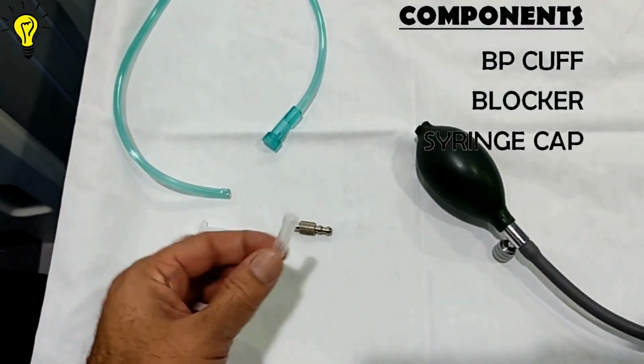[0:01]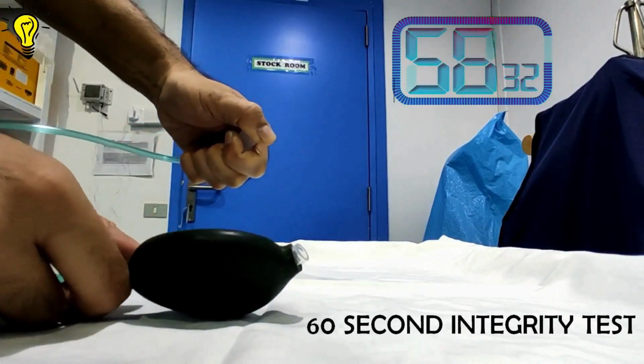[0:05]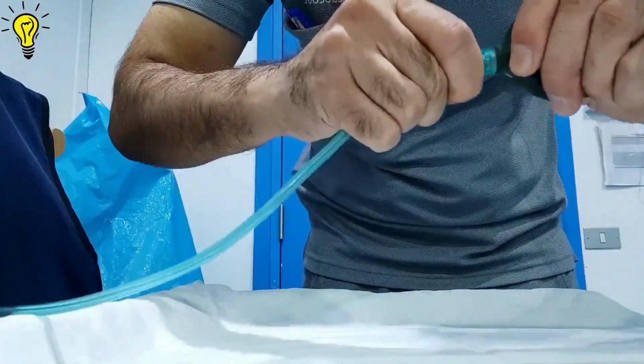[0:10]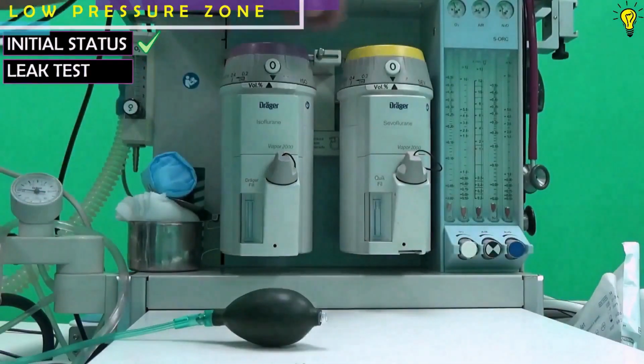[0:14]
Today, we will make our own leak test suction device for anesthesia machine using a BP cuff and practically go through the leak test. Let's begin.
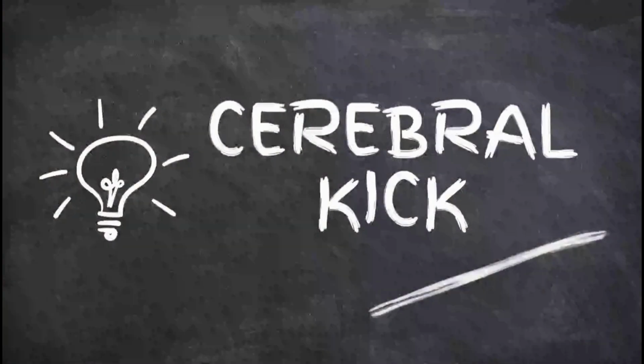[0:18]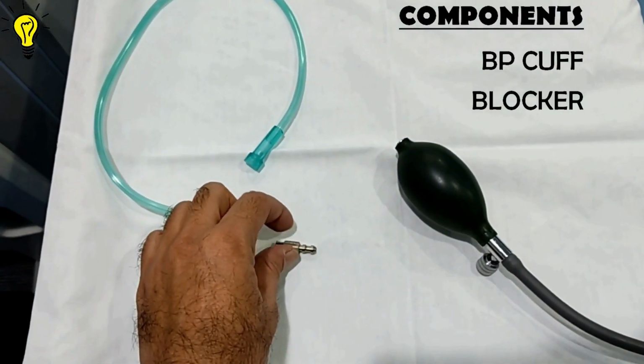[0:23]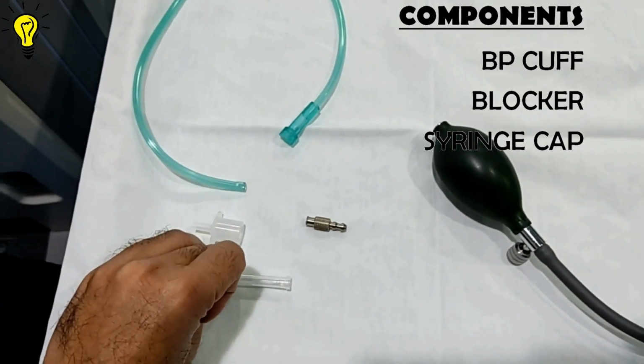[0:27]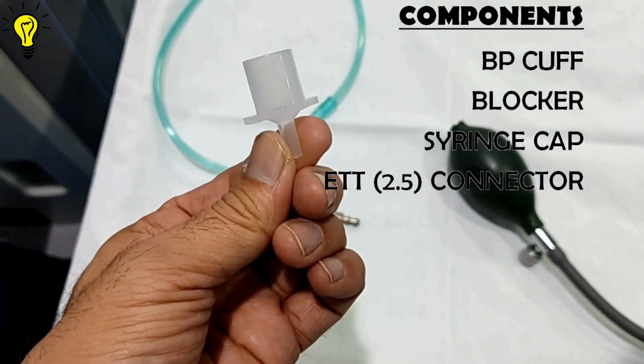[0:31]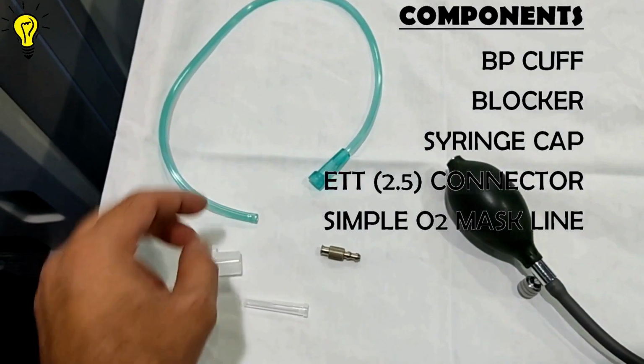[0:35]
The components you need include a BP cuff, a nozzle, which is part of BP cuff, a blocker for the cuff on outer side. I'm using a simple needle cap, a connector from ETT size 2.5, and finally an oxygen line cut from simple oxygen mask kit.
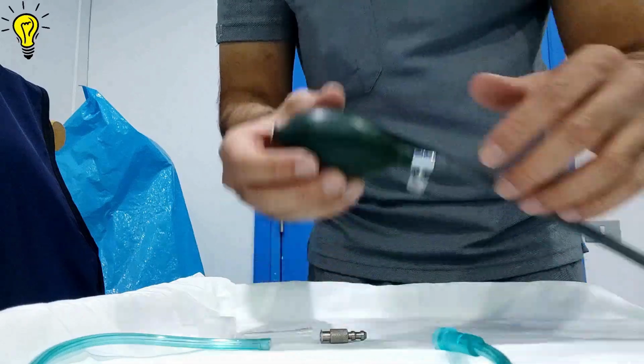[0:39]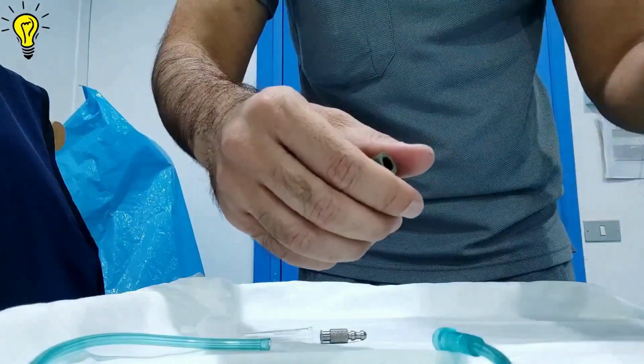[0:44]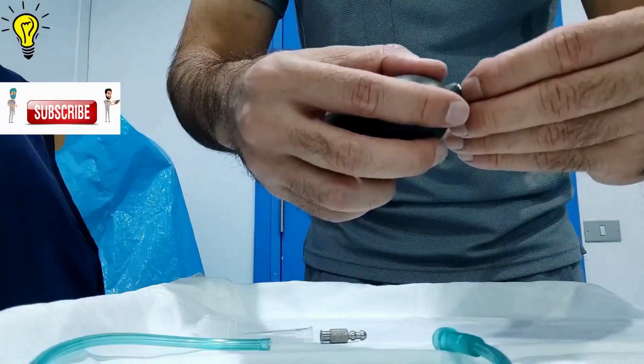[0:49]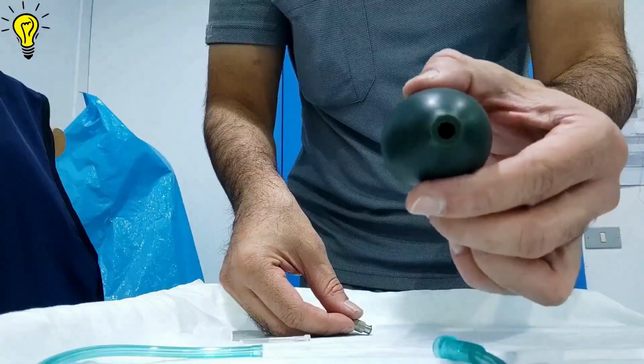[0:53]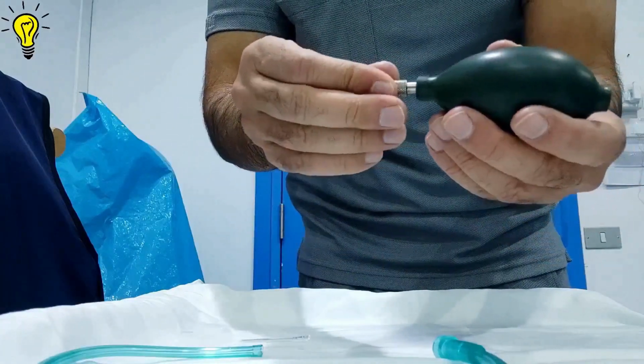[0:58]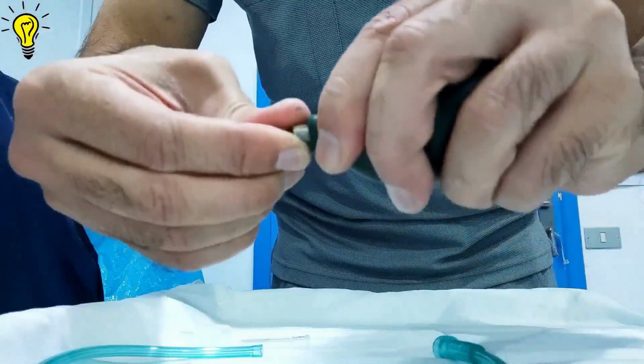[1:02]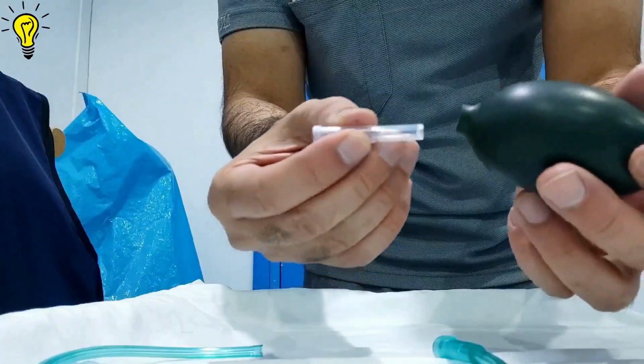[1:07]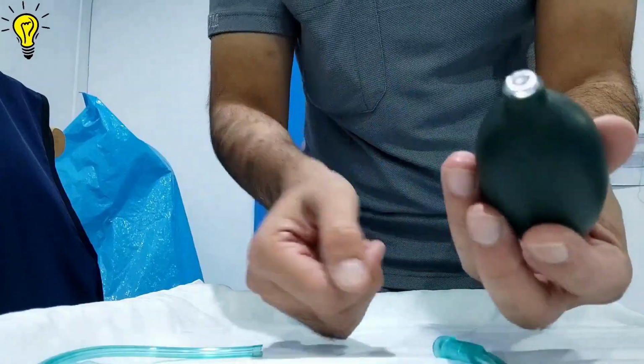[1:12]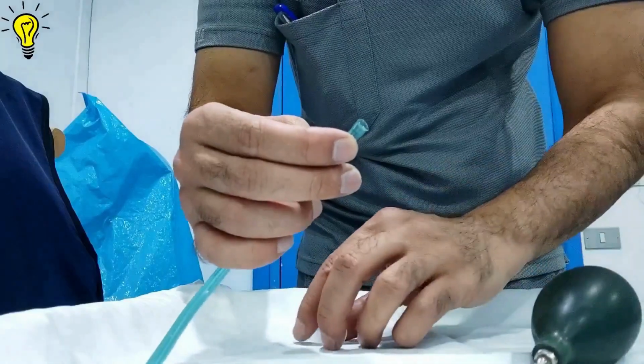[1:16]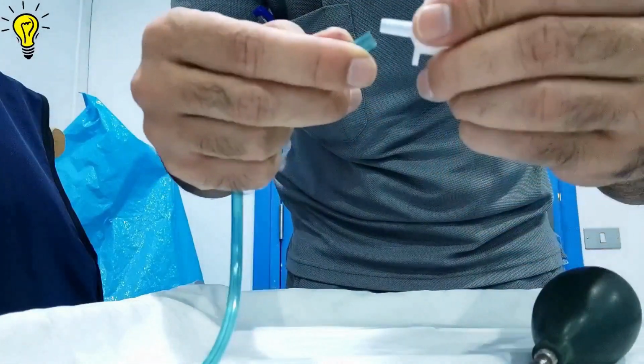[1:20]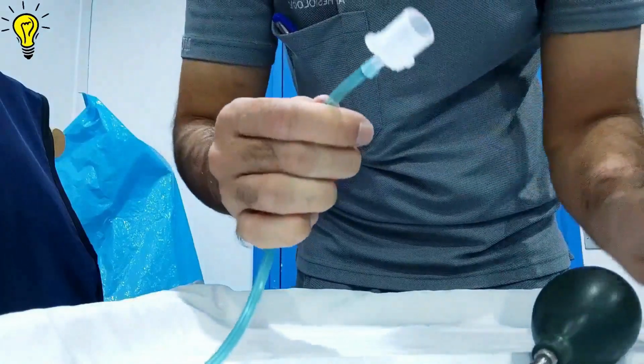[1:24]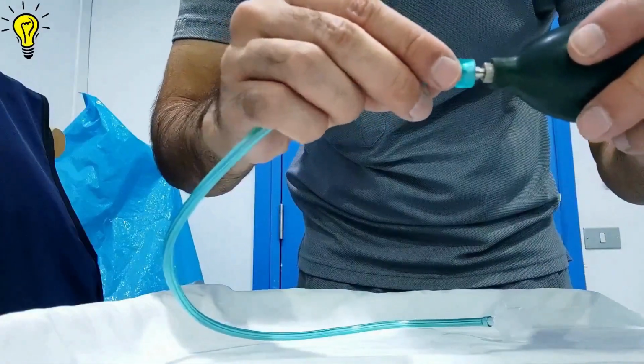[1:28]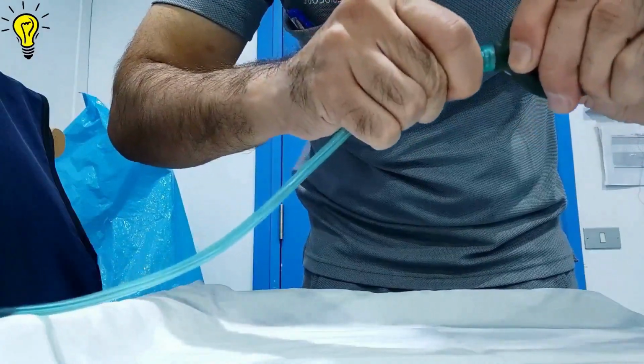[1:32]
Now insert the connector into the oxygen line on one end. Plug the other end of oxygen line to the nozzle end cuff. And we have a working suction bulb now.
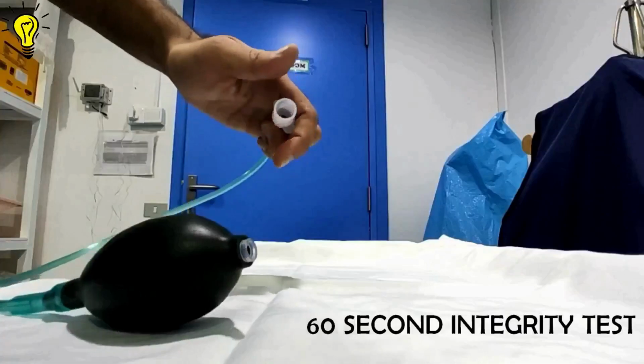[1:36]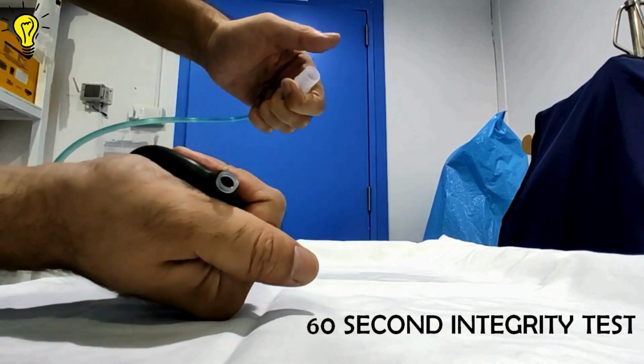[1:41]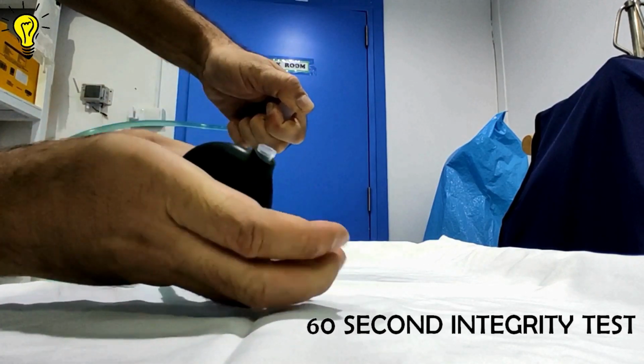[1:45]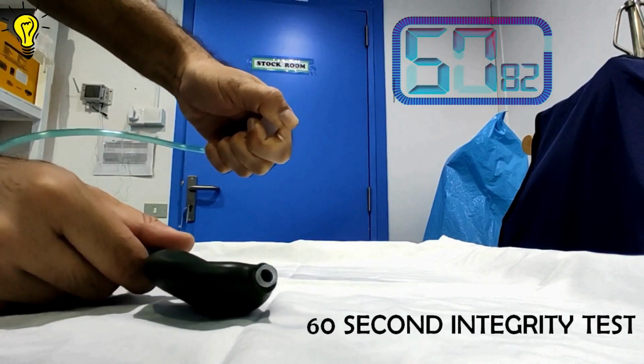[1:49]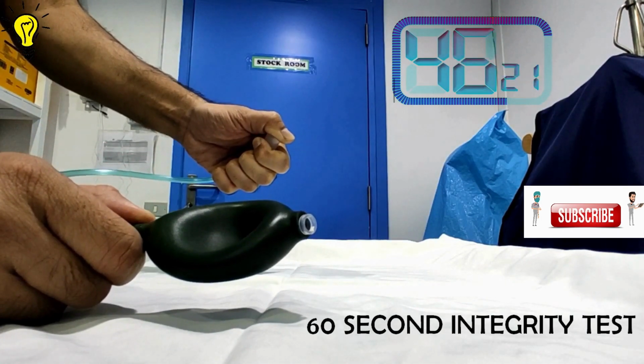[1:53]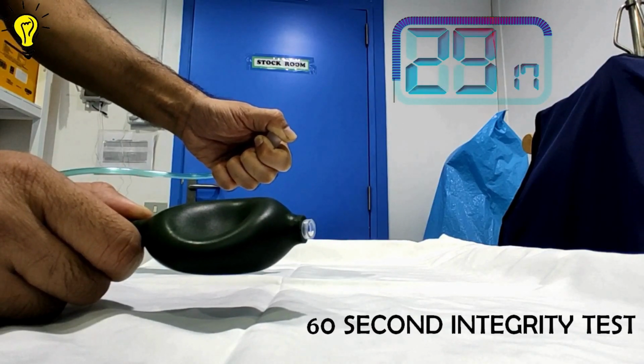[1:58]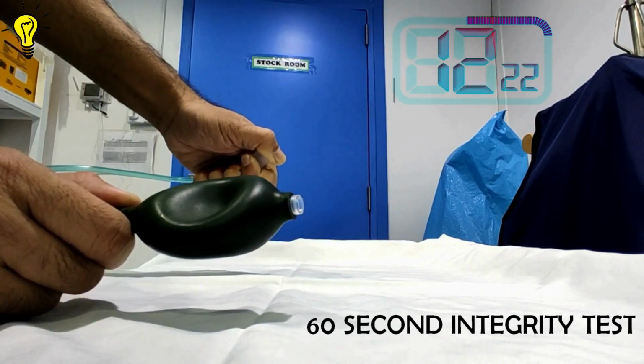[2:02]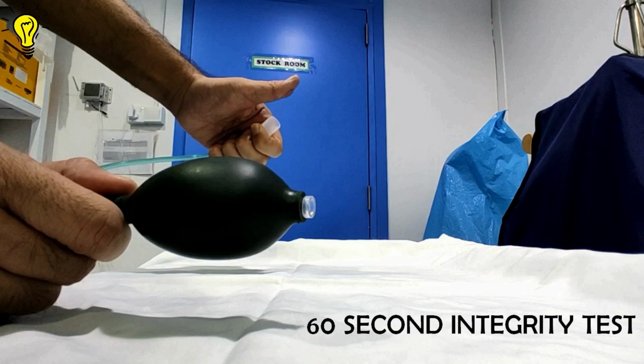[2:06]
To check the integrity of suction bulb system, deflate the cuff many times until fully collapsed and block the outlet connector with your thumb. The cuff should stay deflated for at least 60 seconds. And it's a success.
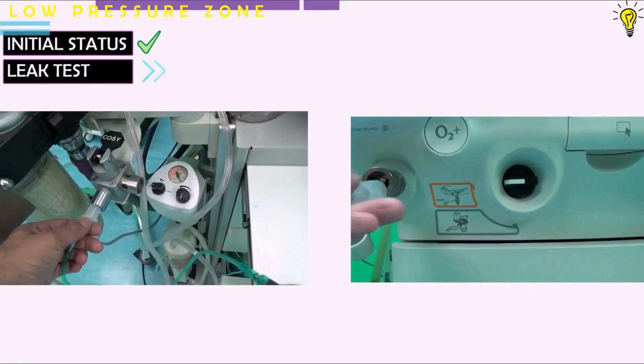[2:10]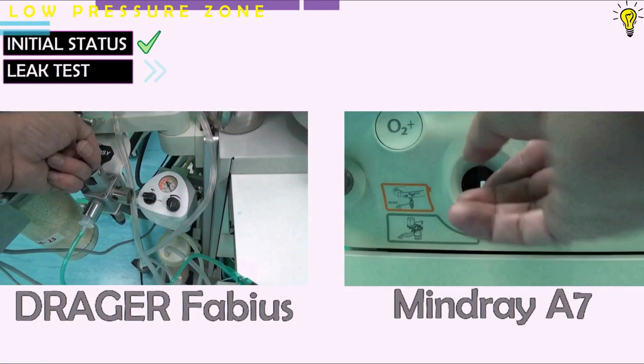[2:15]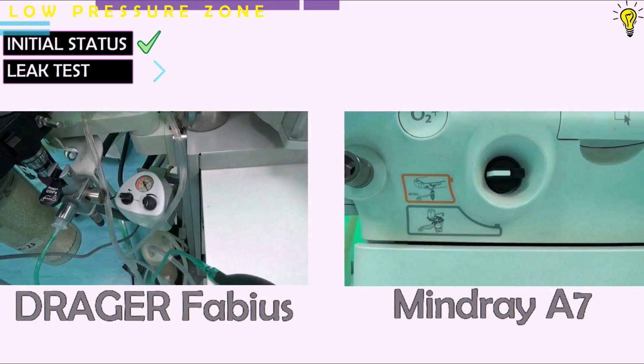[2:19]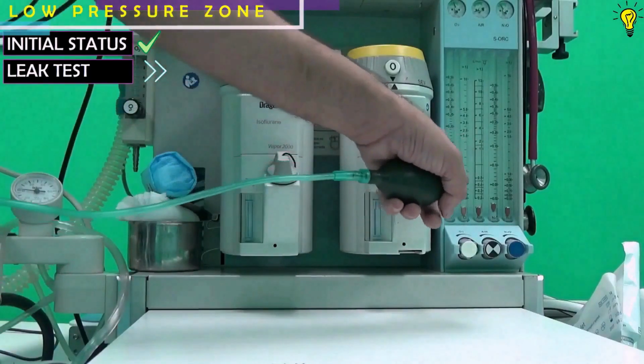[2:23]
So now connecting the connector to the common gas outlet and switching on from circle system to the fresh gas outlet port. Now the machine is off at the moment. The flow meters are off, the vaporizer is off.
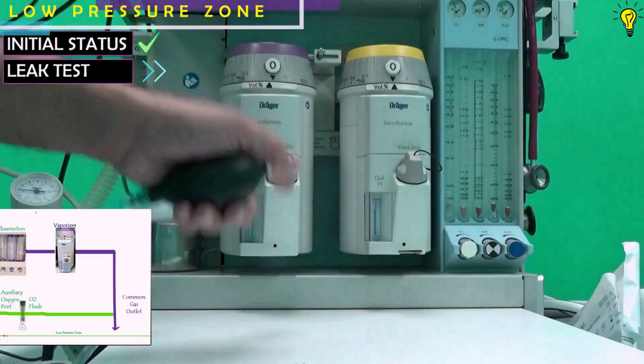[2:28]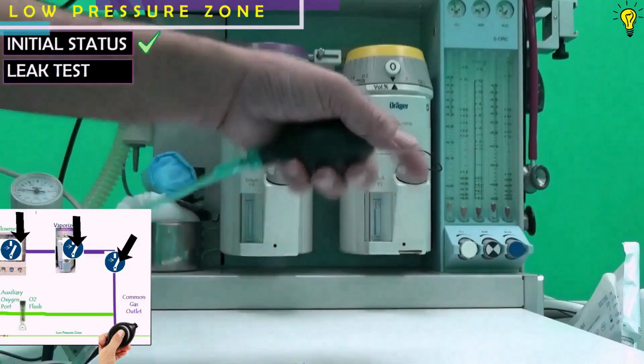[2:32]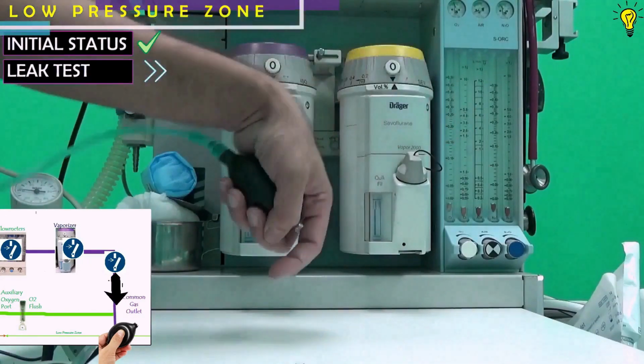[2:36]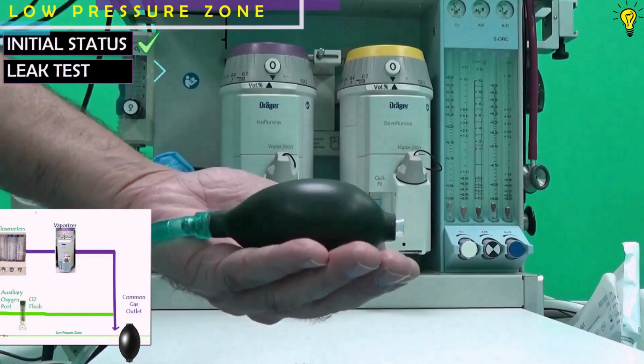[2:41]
Now if there is any leak in the system, then the negative pressure generated by this suction bulb would drive the ambient air from the breakage point into the circuit and it would inflate the bulb, right? But if there is no leakage, the bulb would stay deflated for 10 seconds.
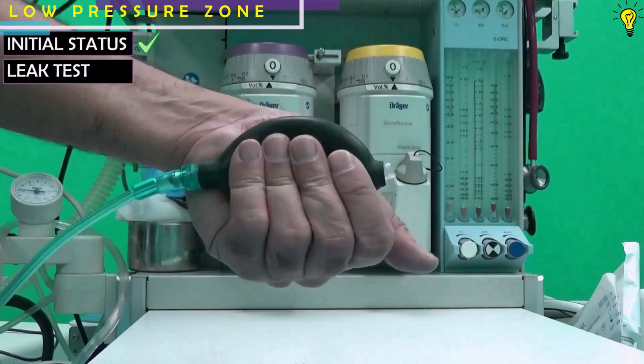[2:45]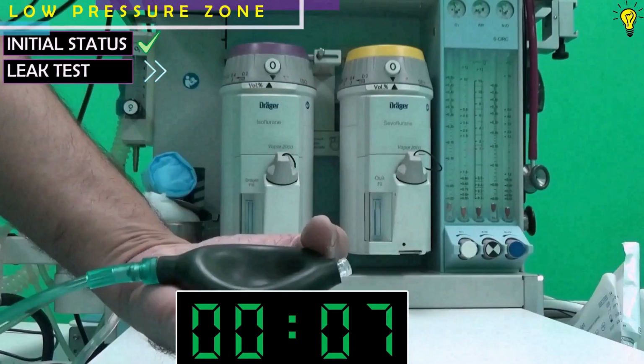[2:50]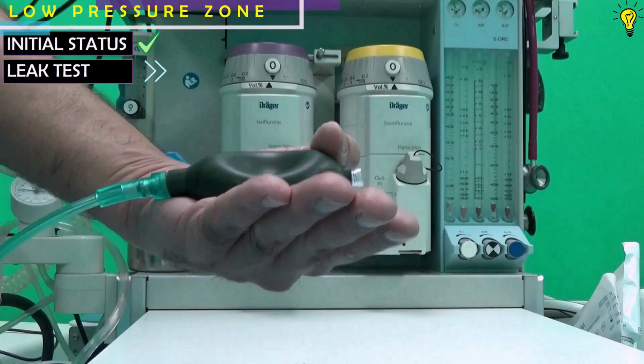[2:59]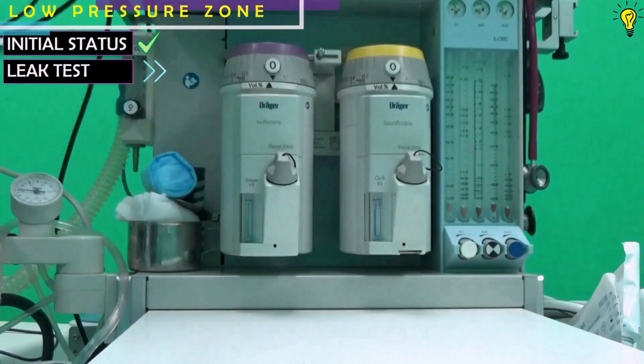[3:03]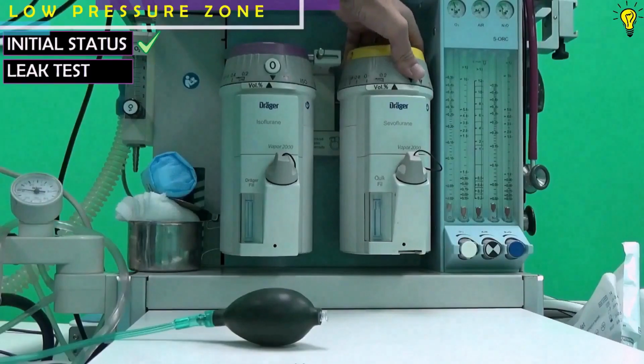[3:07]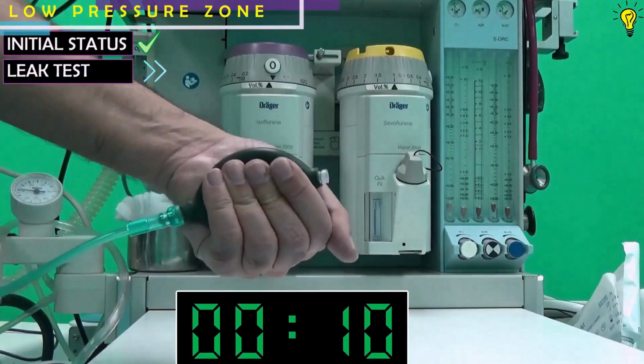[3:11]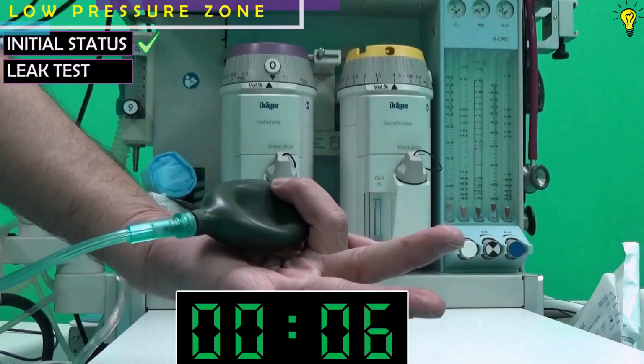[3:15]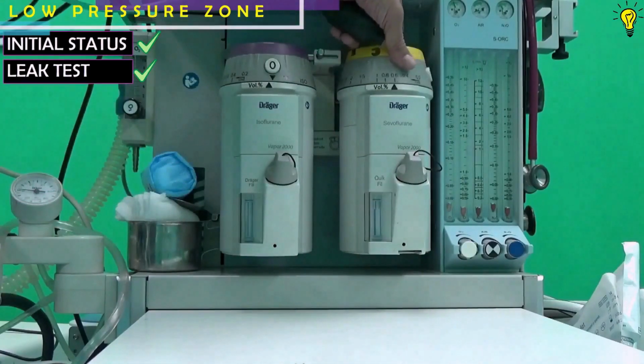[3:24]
Right. Next up, I'm going to turn on one vaporizer and squeeze the bulb again till it is fully deflated. And I'm going to see for 10 seconds if it reinflates. It has not reinflated, so there is no leak in this vaporizer. Repeat this process for the other vaporizer as well.